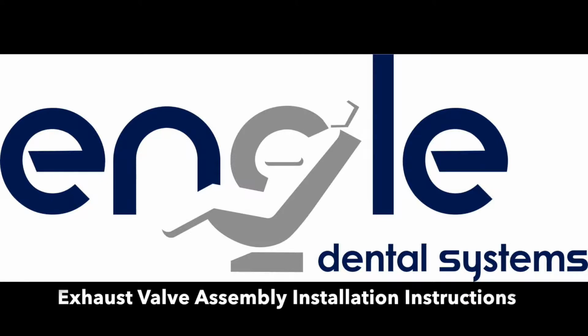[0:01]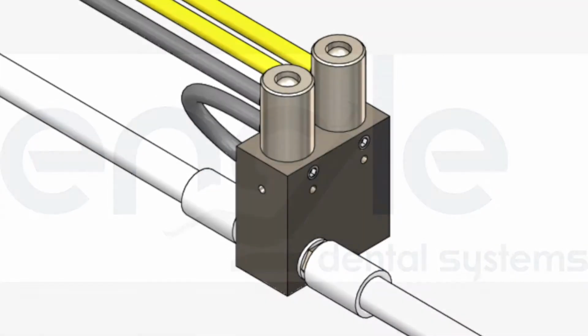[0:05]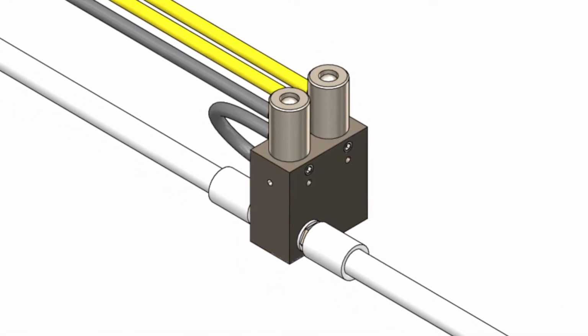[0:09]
Exhaust valve assembly installation instructions. The exhaust valve assembly activates the water relay when the foot control is engaged and the water toggle switch on the foot control is switched to the on position.
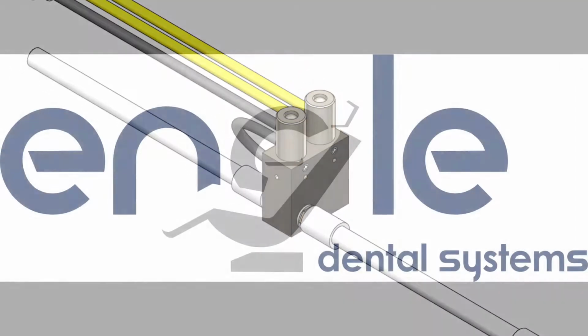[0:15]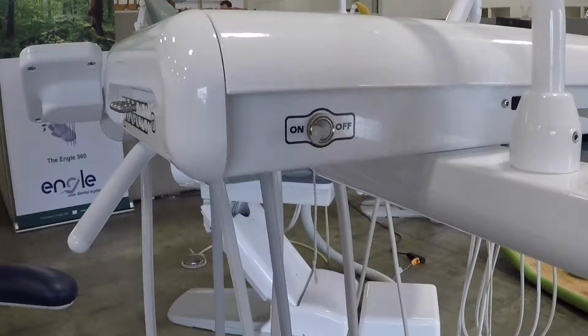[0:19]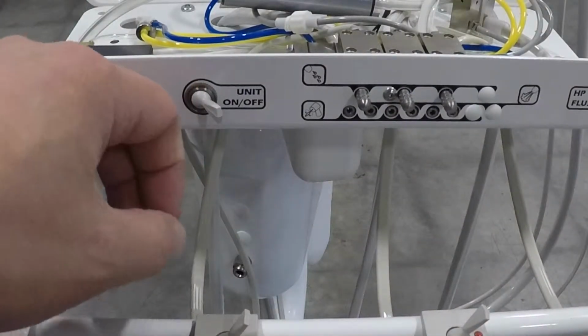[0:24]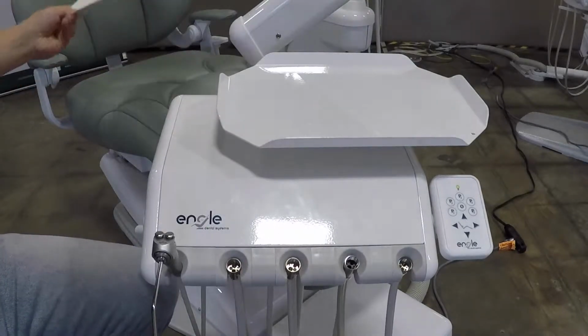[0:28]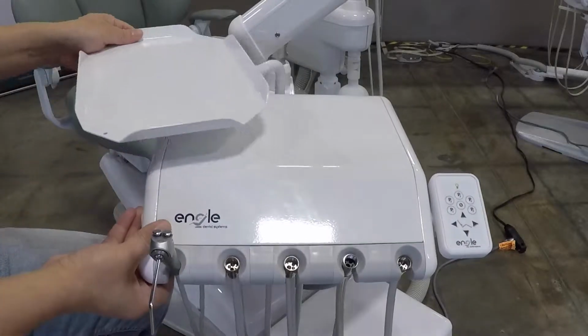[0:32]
Replacing the exhaust valve assembly. Switch the auto control delivery unit's master on-off toggle to the off position. Open the lid of the delivery unit. Remove the tray and move the swivel tray assembly so it clears the auto control top plate.
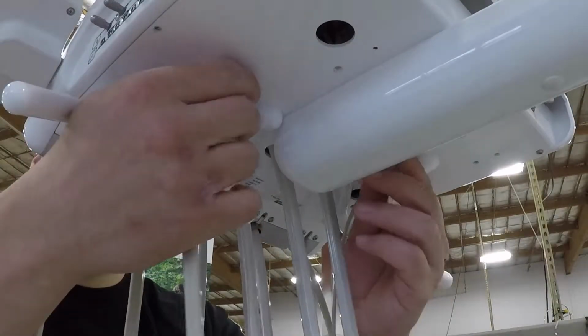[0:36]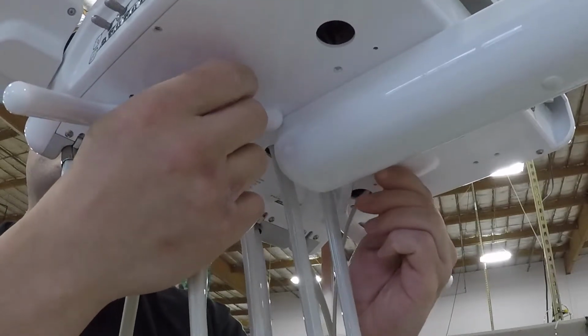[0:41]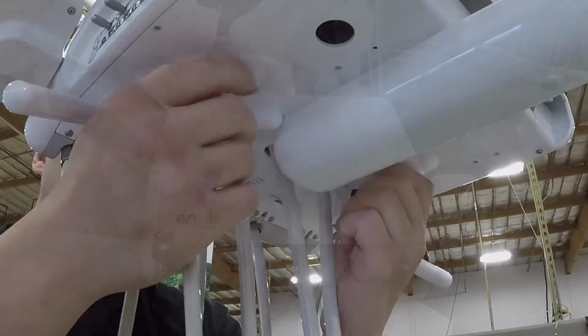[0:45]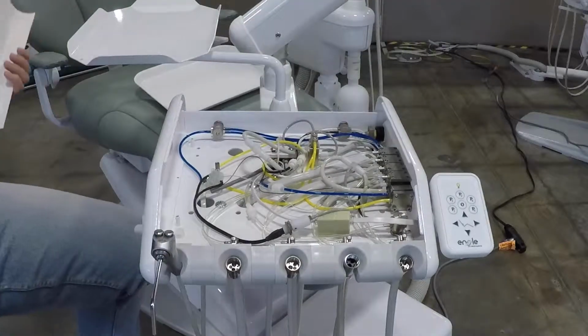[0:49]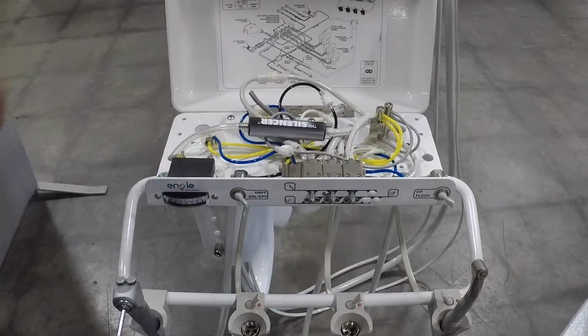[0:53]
Turn the two access nuts located at the bottom of the delivery unit until the top plate is free. Access nuts are secured via E-rings so they will not fall out of the delivery unit when loose. Carefully remove the top plate by lifting from the back edge. For the AS1 auto control delivery unit, lift the hinge control shroud from the front of the delivery unit.
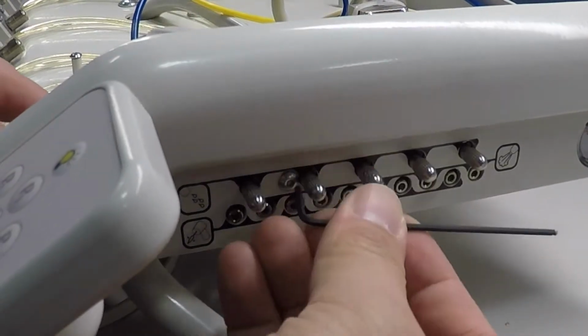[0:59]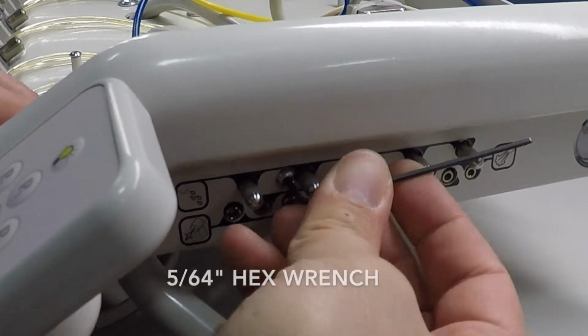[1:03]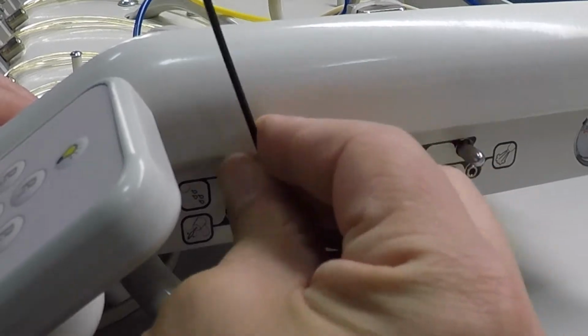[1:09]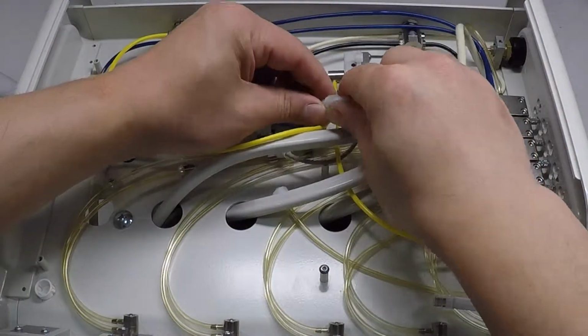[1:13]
Unmount the auto block assembly from the delivery unit by unscrewing the button head socket cap screw using a 5/64 hex wrench. Do not disconnect any tubing from the auto block assembly yet. Decouple the quick disconnects on the 1/4-inch white drive air tube from the umbilical that connects to the auto block assembly.
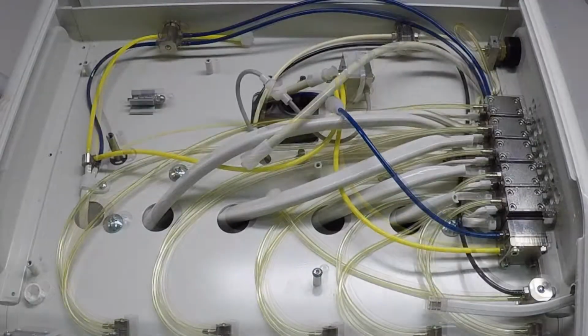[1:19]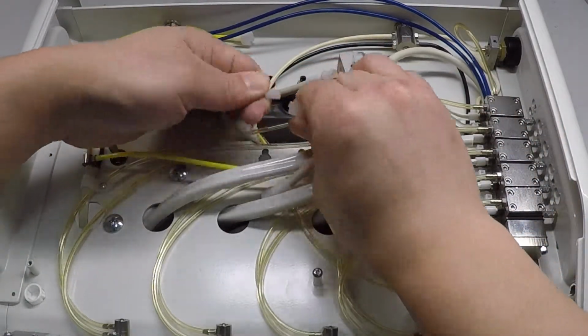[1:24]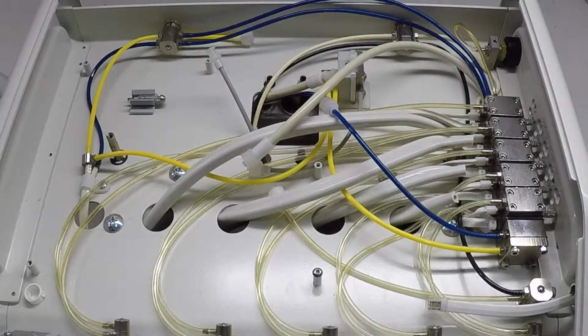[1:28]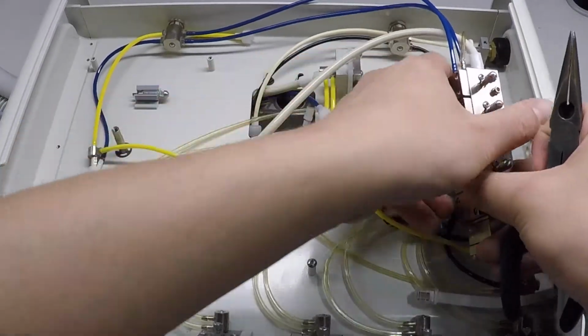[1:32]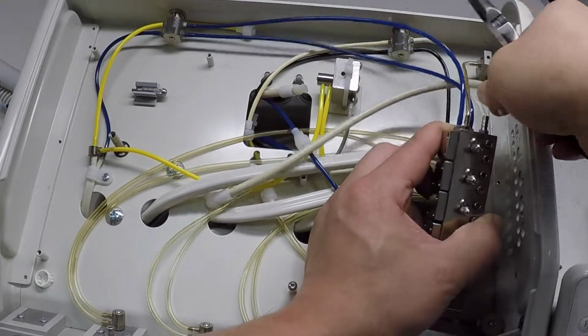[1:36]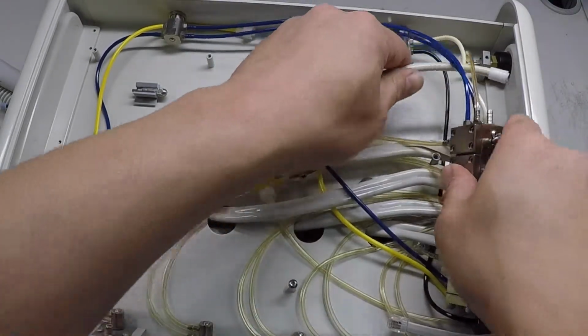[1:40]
Decouple the quick disconnects on the 1/8-inch gray foot control signal air tube from the umbilical that connects to the exhaust valve assembly. Remove the 1/4-inch white drive air tube from the side of the auto block assembly by sliding the large ferrule that secures the tube to the drive air barb away from the auto block assembly.
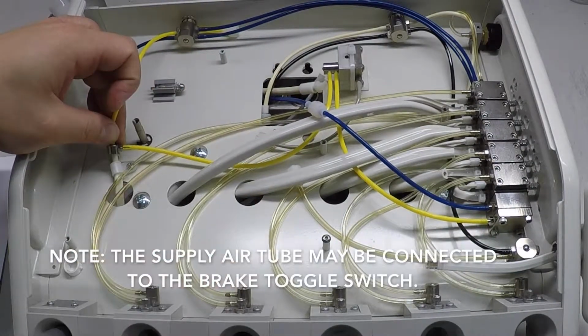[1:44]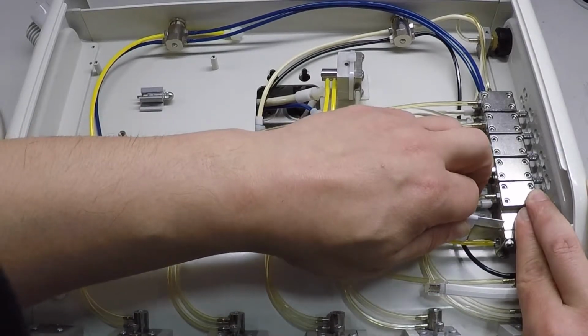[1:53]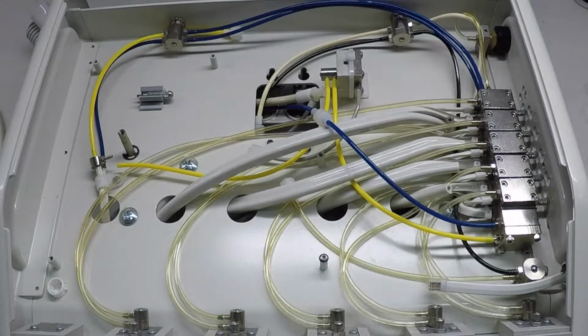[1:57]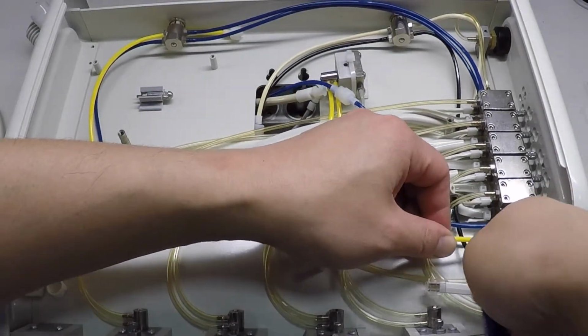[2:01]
Remove the 1/8-inch yellow or black water relay supply air tube that connects to the exhaust valve assembly from the barb T that runs in line with the air supply for the syringe. Remove the 1/8-inch yellow or black water relay supply air tube that connects to the exhaust valve assembly from the signal air barb located on the water relay assembly.
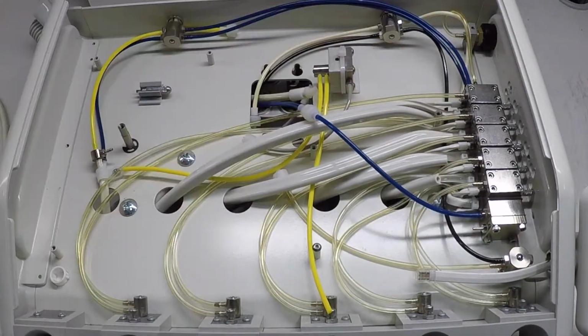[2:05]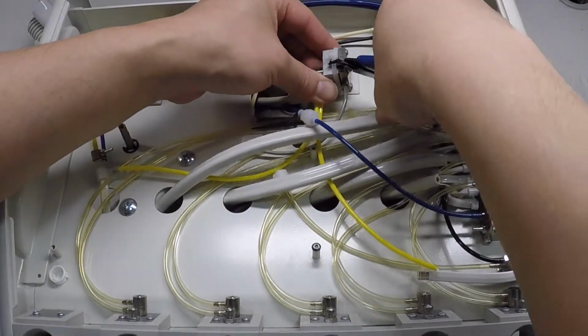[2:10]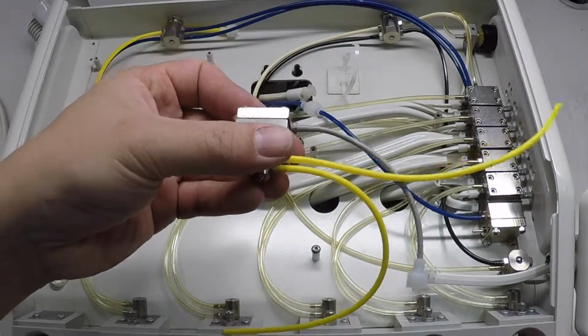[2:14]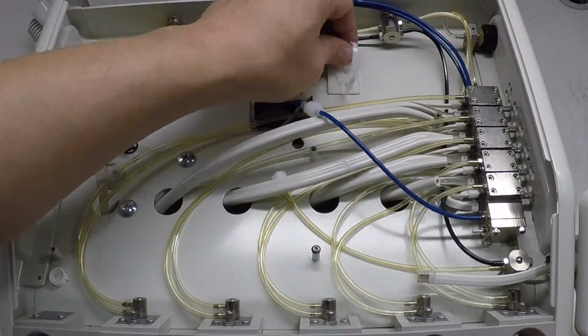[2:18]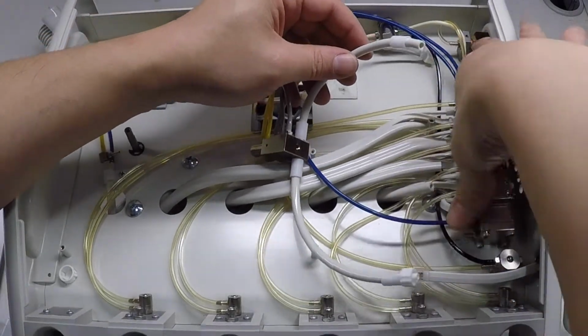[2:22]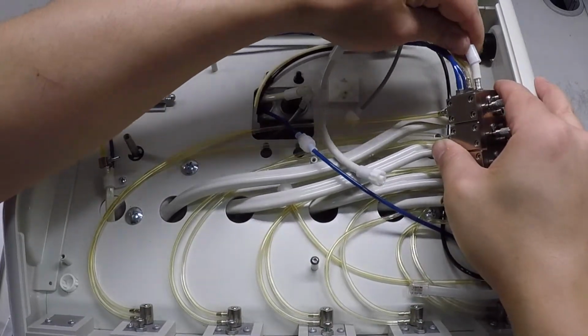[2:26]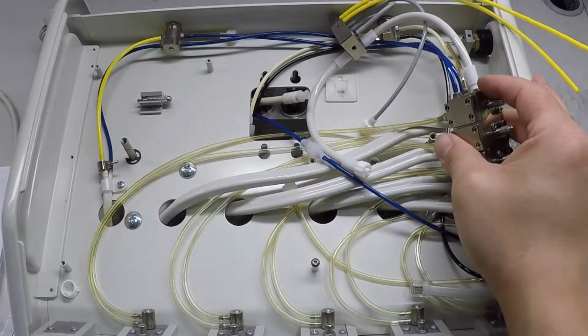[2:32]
If the exhaust valve assembly is secured to the delivery unit base plate with a zip tie, cut the zip tie to free the exhaust valve assembly. If the exhaust valve assembly is not secured to the delivery unit base plate, move on to the next step. Connect the 1/4-inch white drive air tube installed on the new exhaust valve assembly to the drive air barb located on the side of the auto block assembly. Slide the large ferrule over the barb to secure the tubing to the auto block assembly.
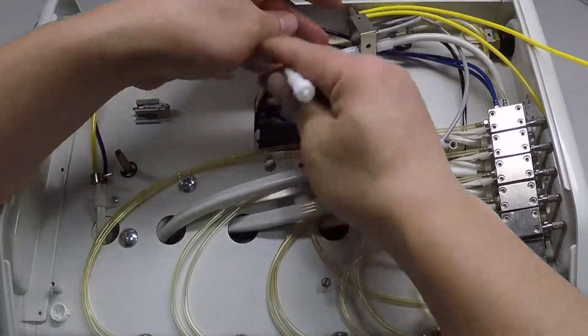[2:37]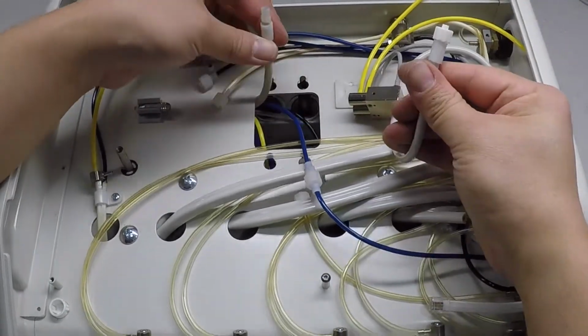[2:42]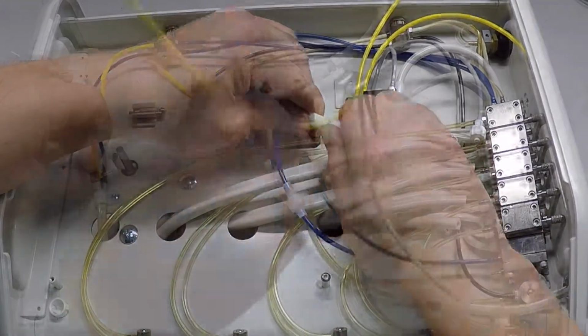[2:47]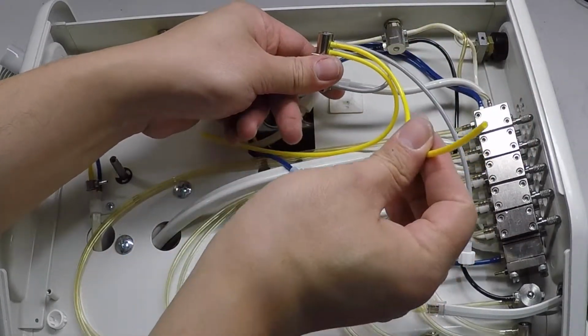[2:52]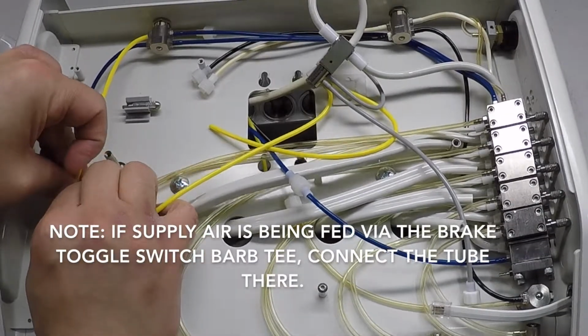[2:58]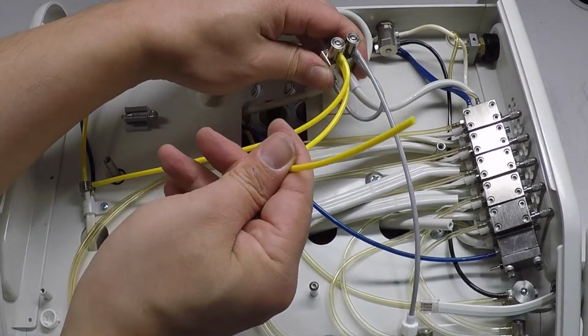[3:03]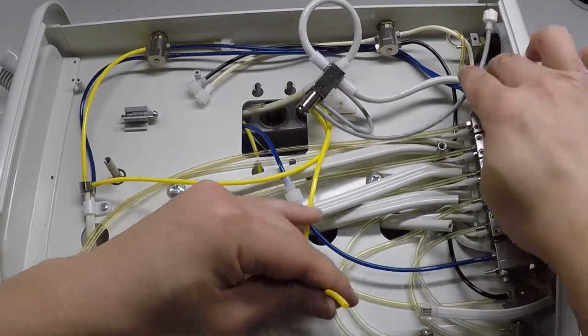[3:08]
Couple the quick disconnect on the 1/4-inch white drive air tube installed on the new exhaust valve assembly and the 1/4-inch white drive air tube from the umbilical. Connect the 1/8-inch yellow water relay supply air tube located on the new exhaust valve assembly's uppermost barb to the barb T that runs in line with the air supply for the syringe. Connect the 1/8-inch yellow water relay supply air tube located on the exhaust valve assembly's lowermost barb to the signal air barb located on the water relay assembly.
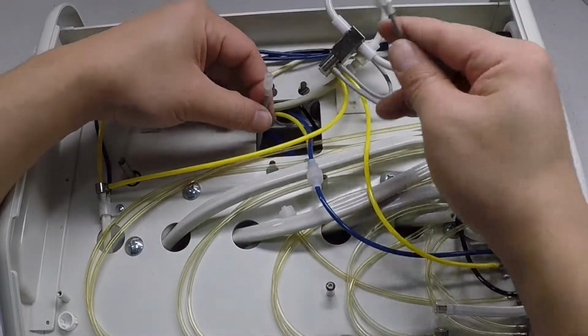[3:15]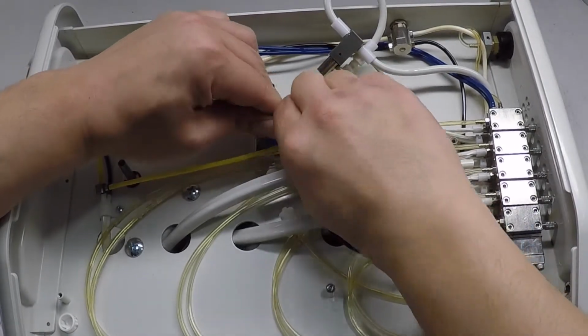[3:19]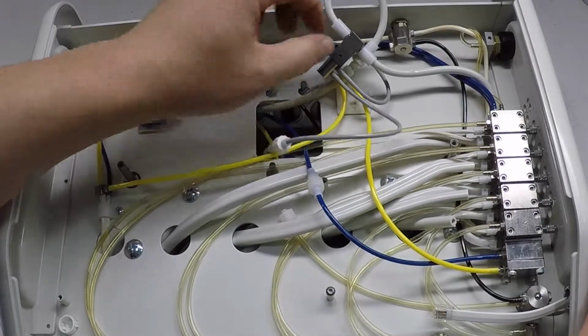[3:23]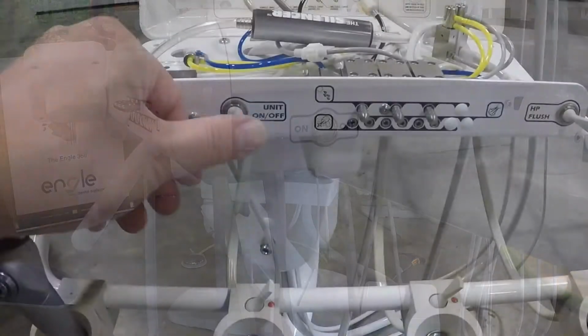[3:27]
Couple the quick disconnects on the 1/8-inch gray foot control signal air tube installed on the new exhaust valve assembly and the 1/8-inch gray tube from the umbilical. Switch the delivery unit's master on-off toggle to the on position.
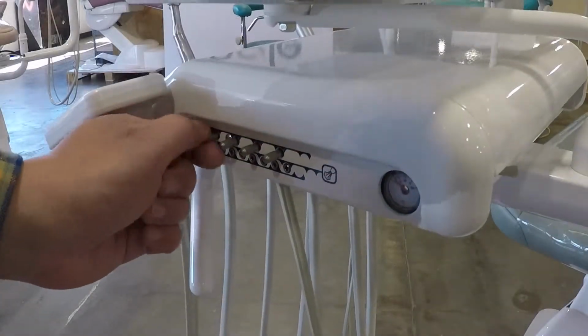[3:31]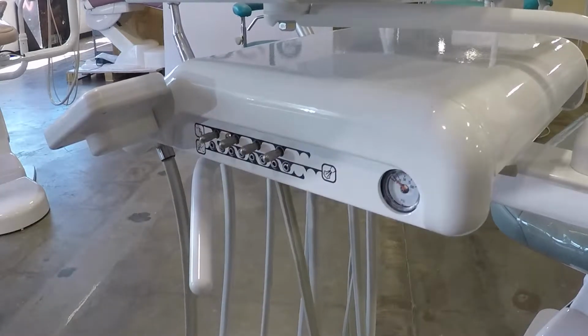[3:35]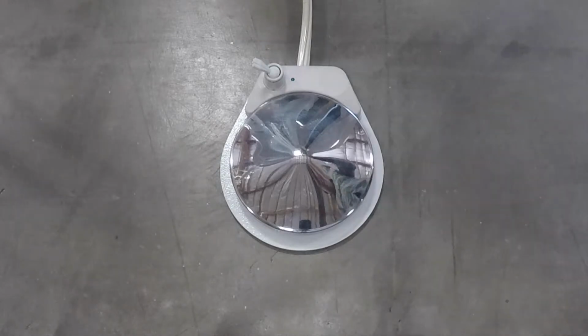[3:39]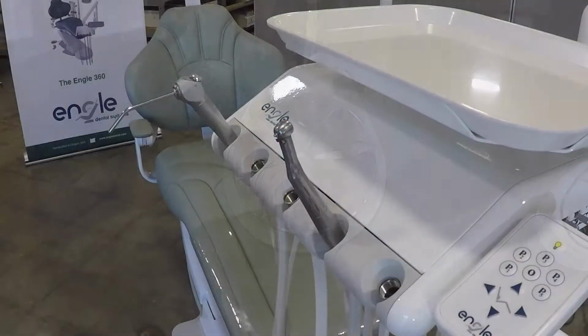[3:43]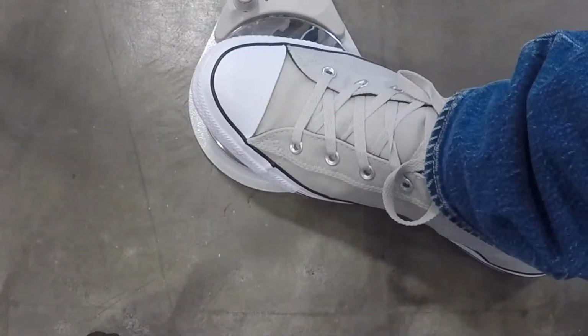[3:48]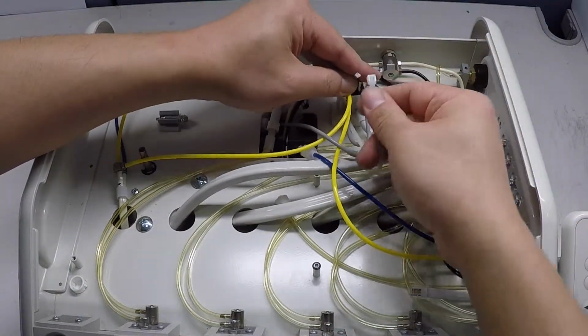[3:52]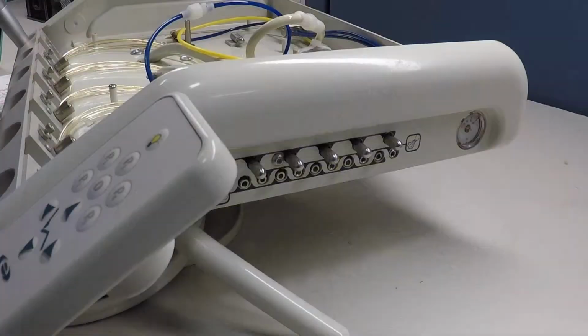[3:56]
Test the functionality of the new exhaust valve assembly by opening the water flow control screw to the corresponding position you plan on testing, switching the water toggle switch located on the foot control to the on position, unmounting the handpiece from the auto holder, then engaging the foot control. If the exhaust valve assembly functions properly, secure the exhaust valve to the base plate by using the zip tie and tie mount provided in the kit.
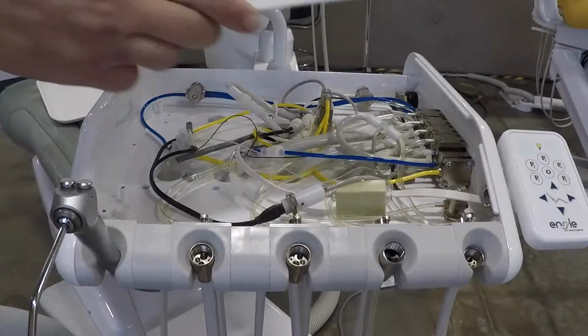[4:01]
Mount the auto block assembly to the delivery unit and secure the delivery unit top plate back to the delivery unit or close the shroud.